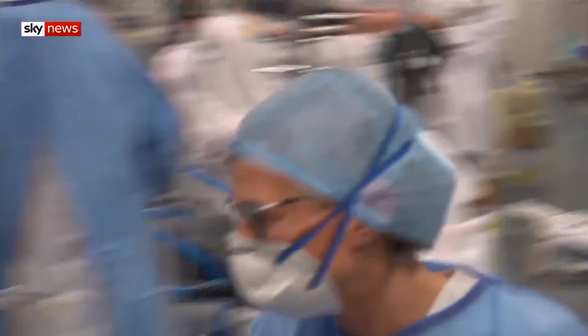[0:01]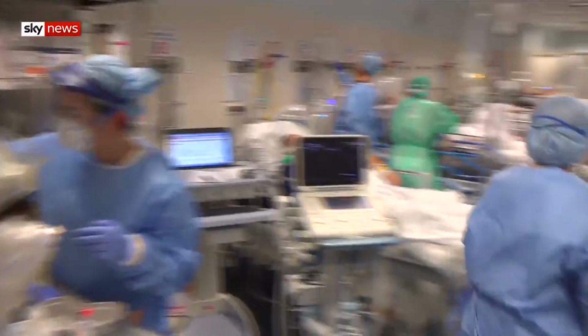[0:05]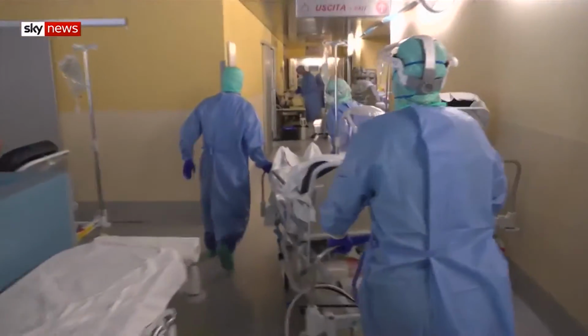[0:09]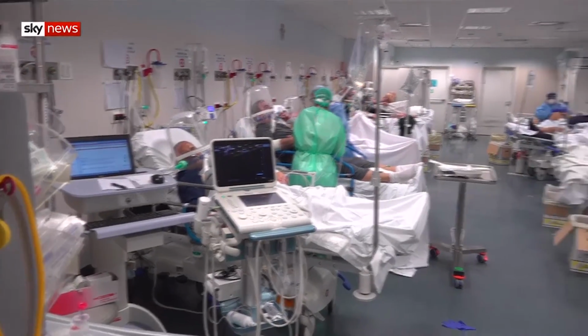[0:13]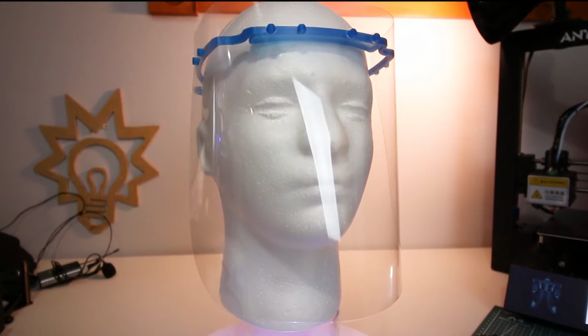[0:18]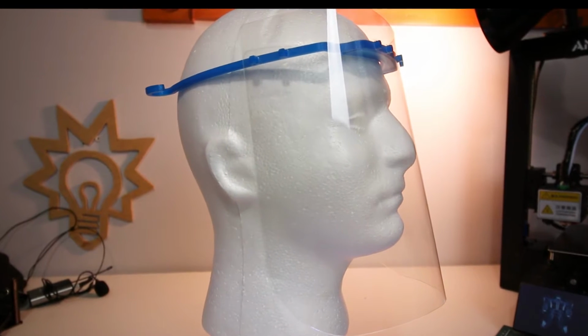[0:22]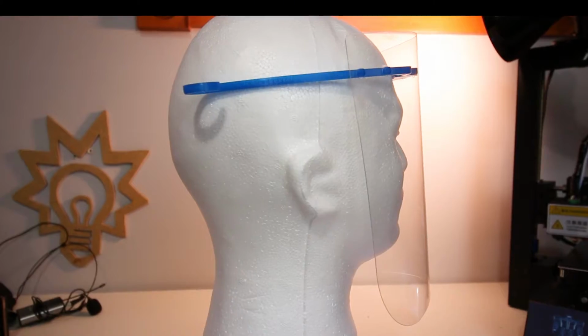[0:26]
Around the world, our healthcare professionals are really up against a challenge right now, and in some cases, they don't have adequate PPE to protect them. I thought, well, maybe there's something I can do about this, and decided to look into 3D printing whatever I could. Turns out, a face shield is not that difficult to recreate at home, works just as good as the professional units, and gives adequate protection for the user.
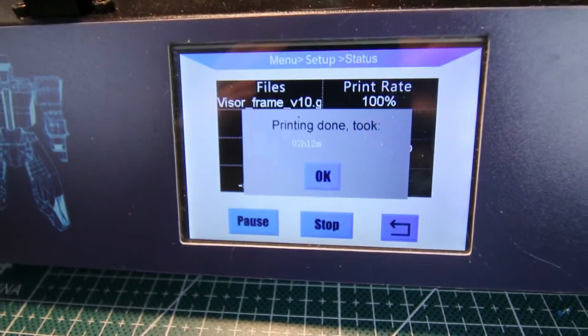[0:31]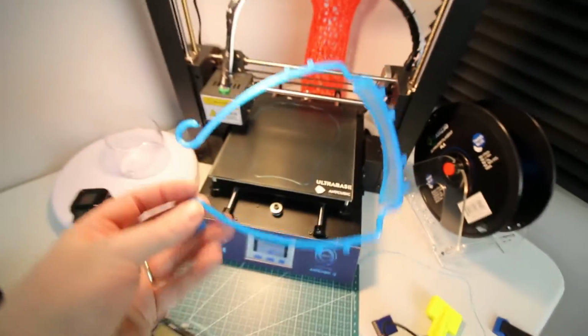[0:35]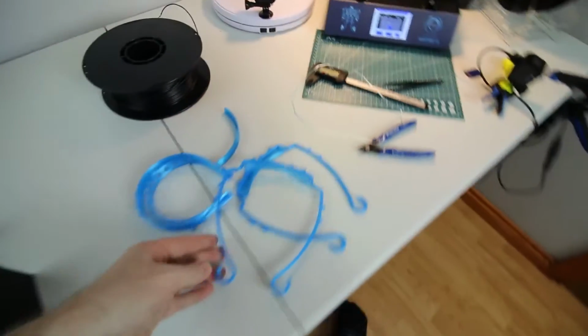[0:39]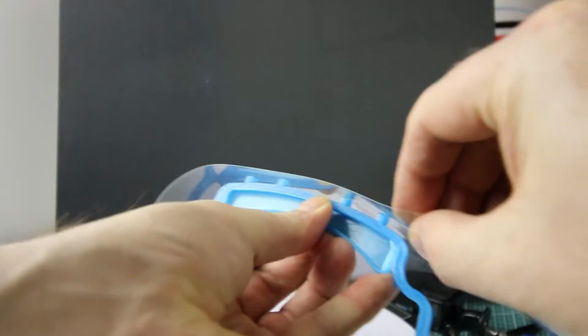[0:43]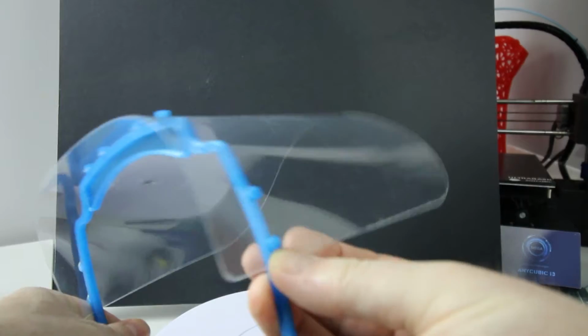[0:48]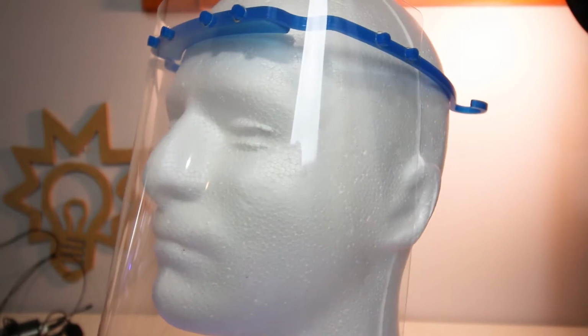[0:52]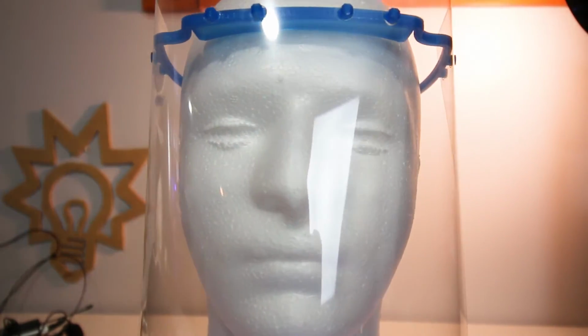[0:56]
In this video, we'll take a look at the ones I'm making and how I went about making them. We'll play around with my new K40 laser cutter. It's a 40-watt CO2 laser that happens to be great timing because it works great for cutting these shields. I'll give you the settings I use, the instructions, pretty much everything I can so that you can duplicate these at home on your own 3D printer or laser cutter or whatever you have. You can make them by hand if you want to.
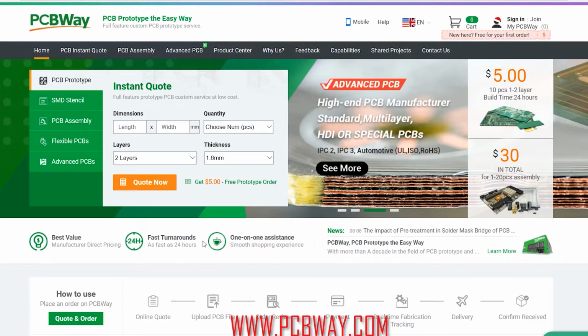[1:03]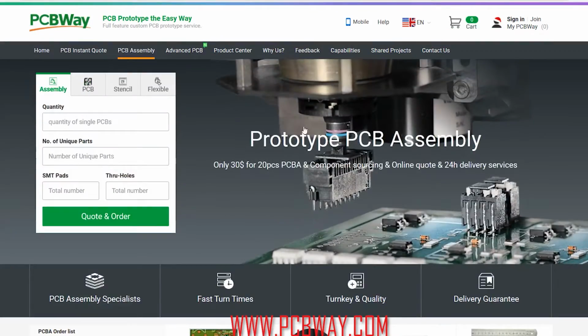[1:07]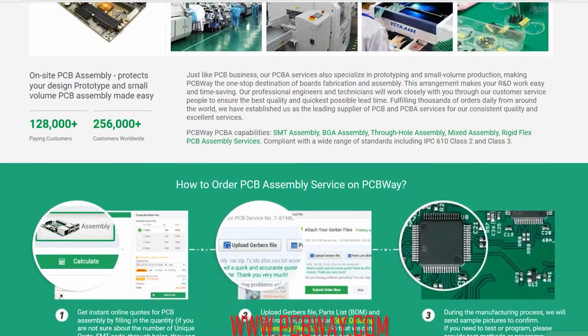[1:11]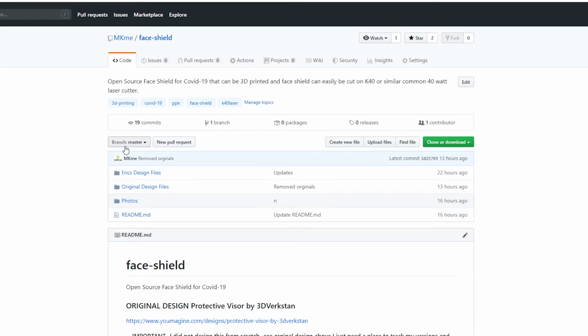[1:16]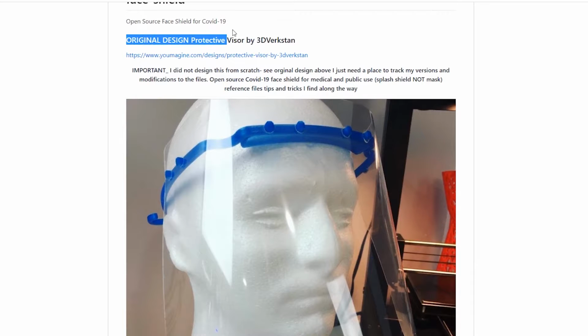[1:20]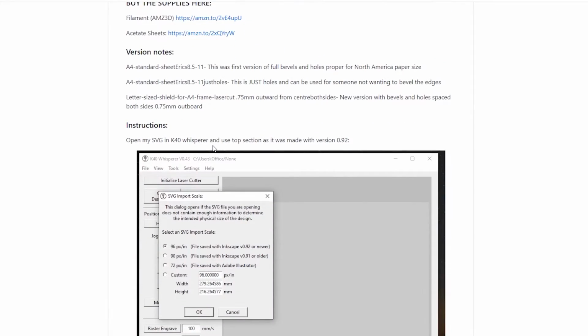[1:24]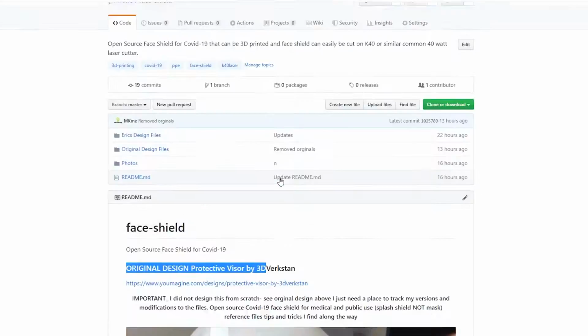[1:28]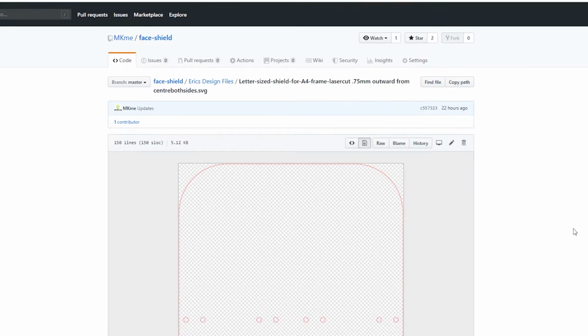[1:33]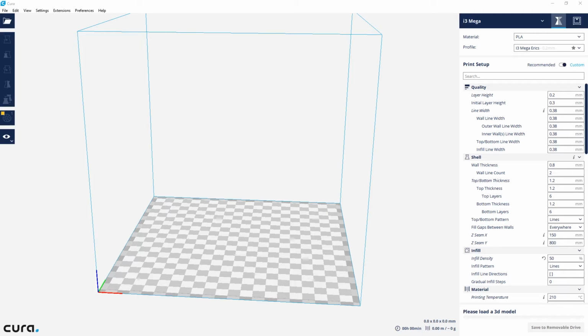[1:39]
So, if you follow me on Twitter, you probably saw this from start to finish when I reached out to Naomi and Chris to find out, did they know anyone with a design file for an easy-to-make headset? Somewhat easier than the really popular one right now. I wanted something that could be printed fast and cut from existing materials, particularly the faceplate. I wanted to be able to use plastic that anyone can get. Well, sure enough, here we go.
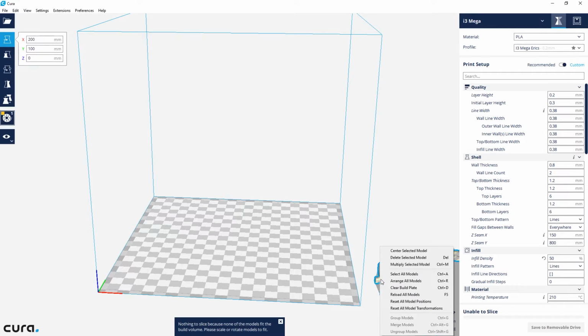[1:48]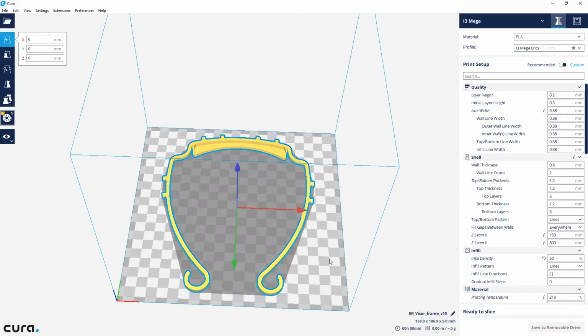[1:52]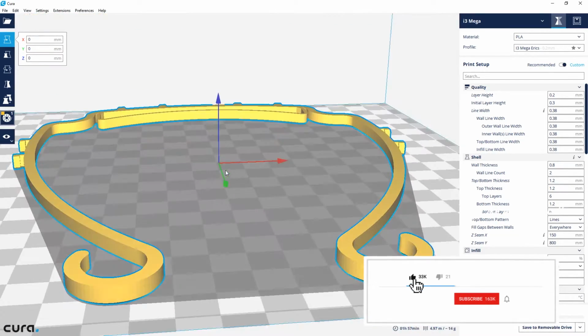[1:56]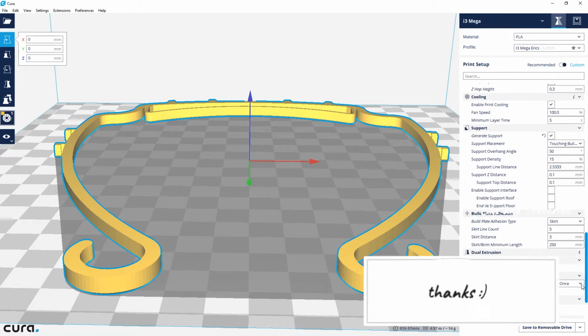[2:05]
The design and everything is linked below. I was able to download it from the designer in Sweden. He made it available open source, which was absolutely awesome. Pulled it into Cura. The settings are pretty straightforward. I also link my GitHub down below for all my Cura settings for my different printers in case it might help you. I loaded things up, hit print, and sure enough, things came out pretty good first try.
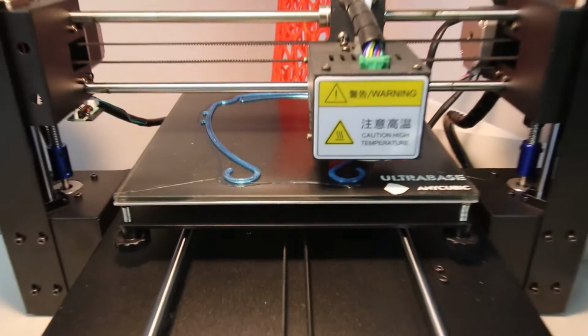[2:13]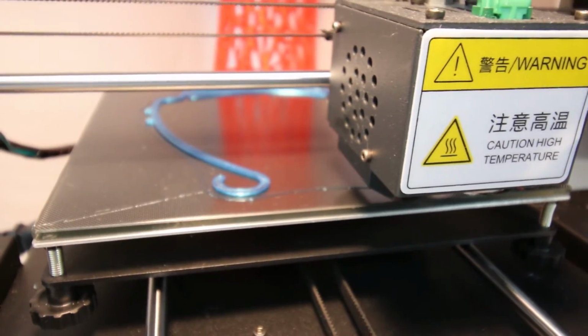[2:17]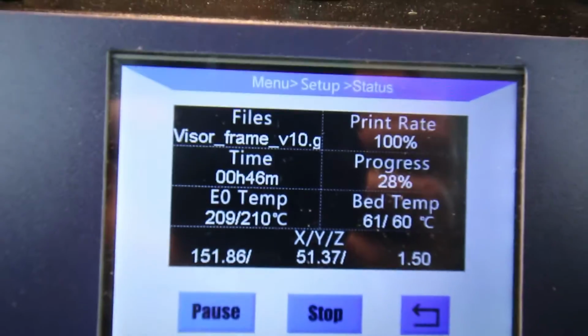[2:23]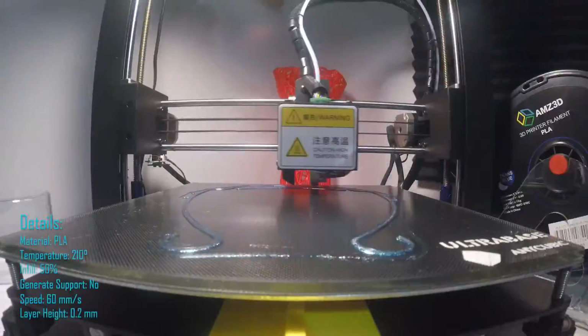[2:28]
In a little over 2 hours, the i3 Mega made short work of this headband. It fits great. It's nice and flexible with the 50% infill, good and strong. I had no issues whatsoever. It just worked first try. Here's a time lapse.
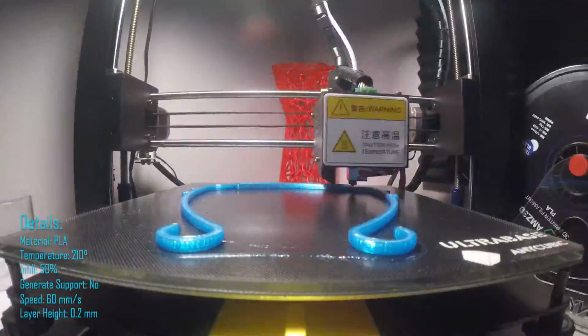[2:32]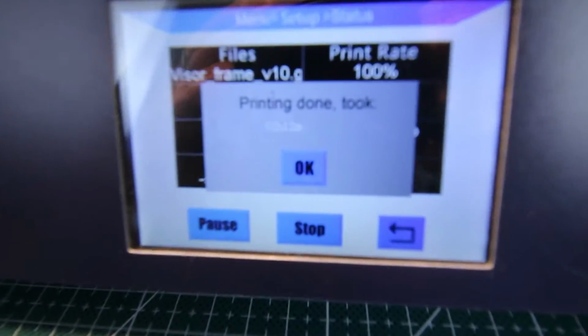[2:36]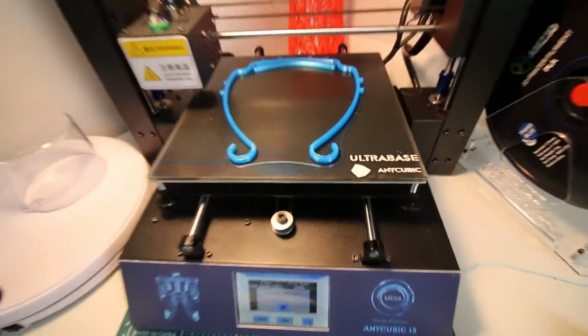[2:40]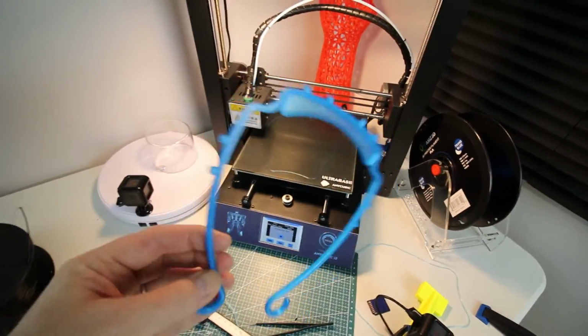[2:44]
It should be said that this ultra base print bed on the i3 Mega is just incredible. It's great for production parts like this, but you just walk up, pull your part off, hit go, and you're back printing another one. No messing around with glue or scrapers or anything like that.
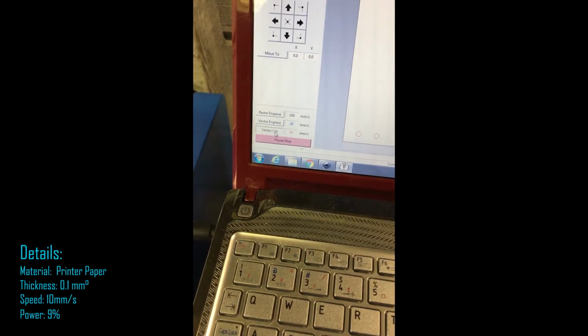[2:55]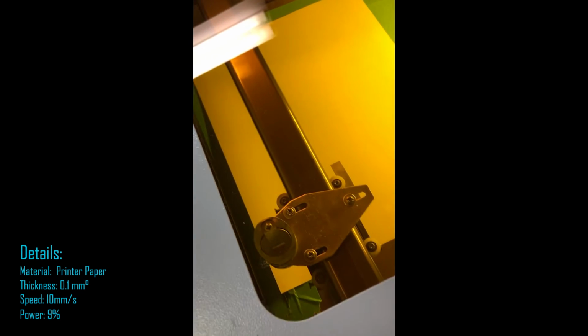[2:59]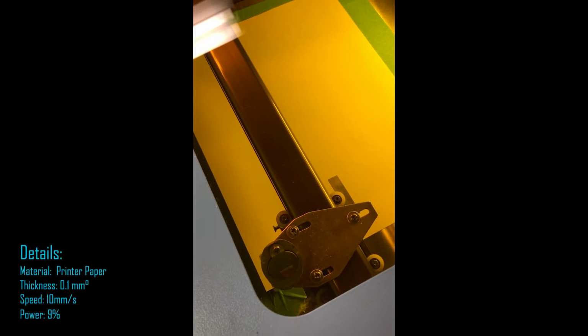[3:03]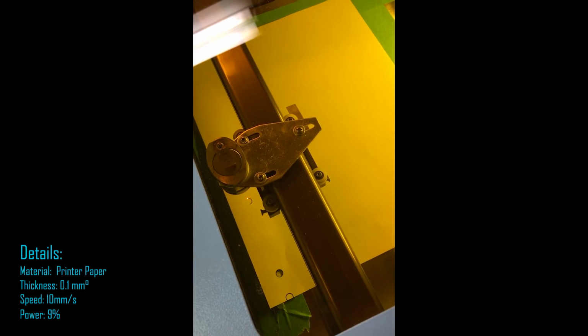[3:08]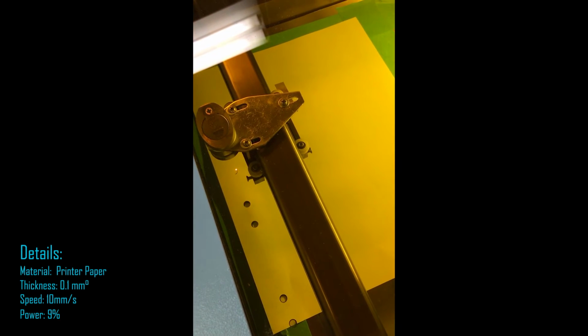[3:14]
At this point, I went out to my garage where I've set up my K40 40-watt laser cutter. I have a video on that coming up too, guys, if you want to see a review. But I'm pretty new to laser cutting, so I definitely have some things to learn. As you'll see here, the first design cuts right off the edge of the paper. No good whatsoever.
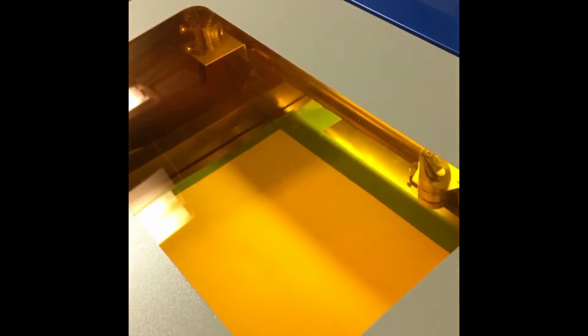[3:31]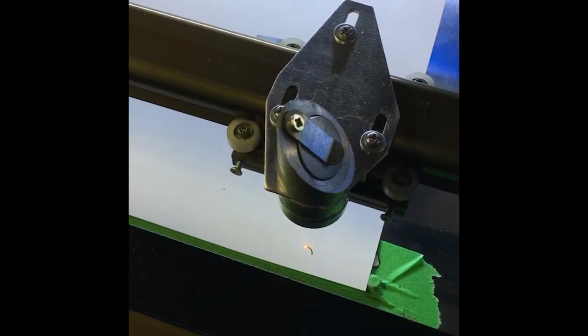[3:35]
This was due to the fact the design came from a friend in Sweden, and here in North America, we use a different size of paper. Our 8.5 by 11 is not the same as A4 in Europe. Minor thing to fix up. I got that fixed up in the design. I was able to run another cut. This time, it seemed to be just exactly what I was looking for. An 8.5 by 11 sheet was going to work perfectly.
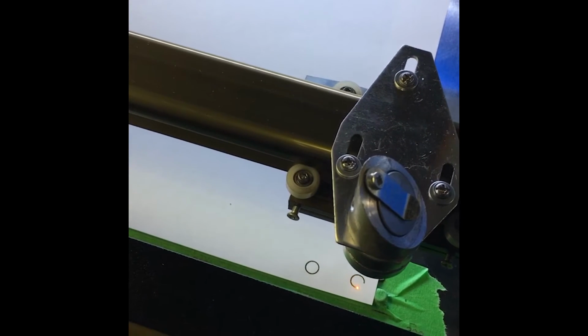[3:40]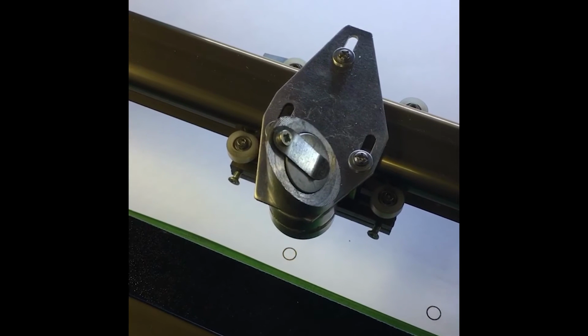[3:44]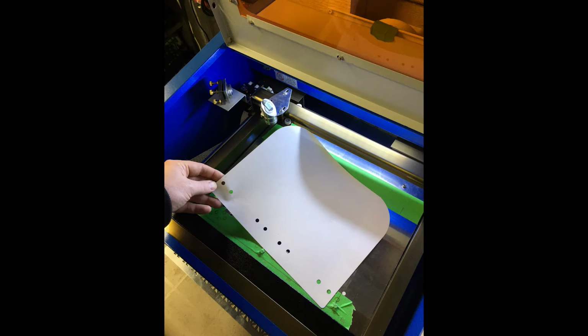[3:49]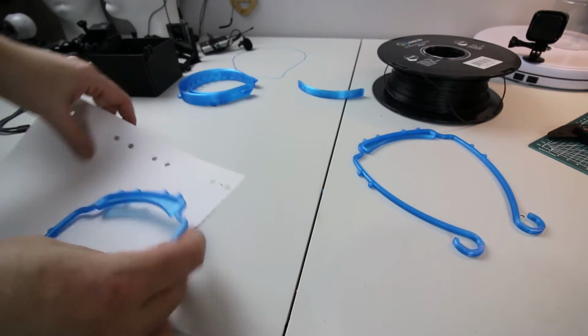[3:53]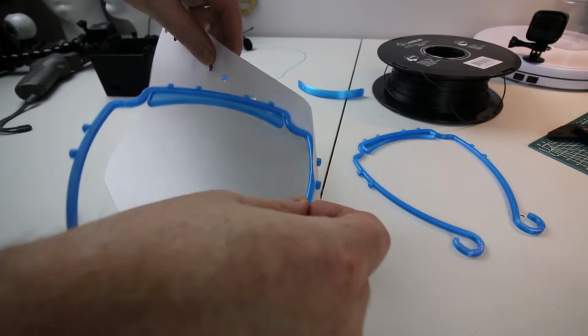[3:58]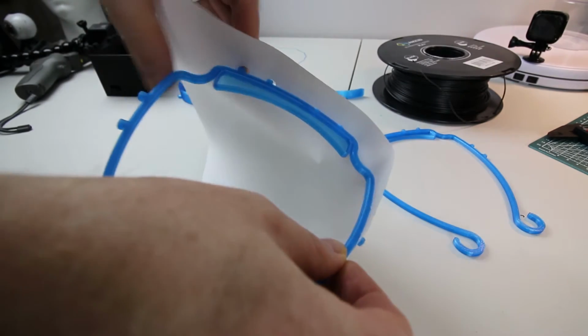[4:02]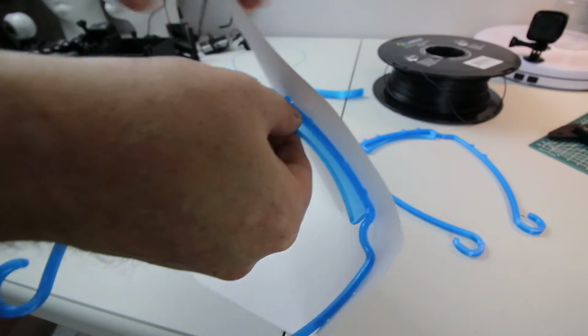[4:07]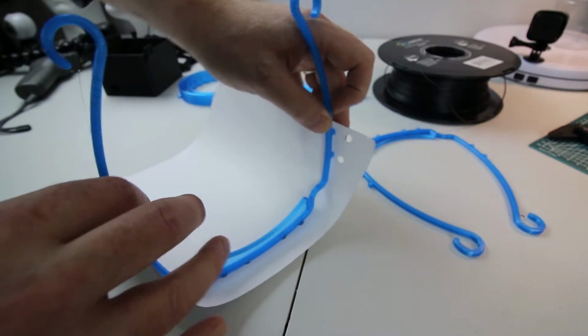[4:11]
Now that I had my paper cut out, I could go ahead and test fit it into the mask. The original designer used beveled edges on his and provided me a new design as well. All I had to do was modify the hole spacing a little bit. So here's where I try the paper template onto my 3D printed brackets and found out they fit pretty good, but it does need a little bit of work here. The hole spacing needs to be spread out a bit. Minor thing. This is why we do prototyping. This is why I used paper in the first place.
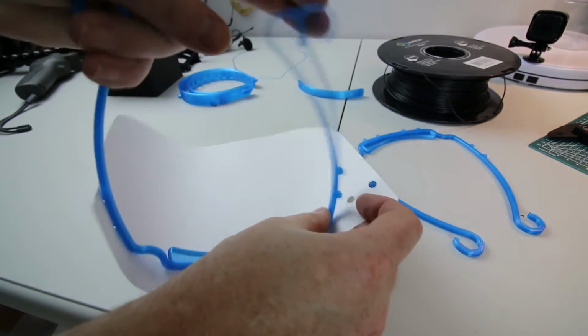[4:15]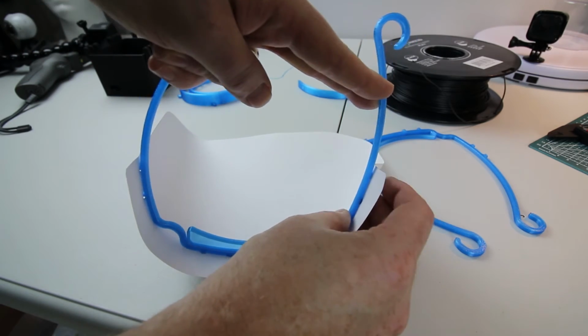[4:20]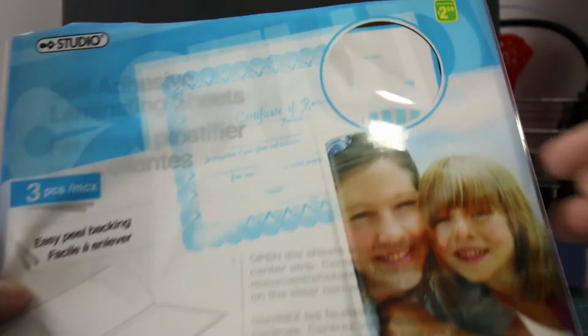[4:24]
But overall, I'm really getting excited at this point. This really looks like a viable face shield, something that anybody can use anywhere. With things under quarantine, I did what any good maker would do.
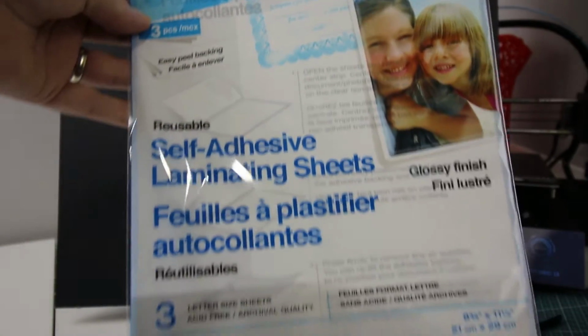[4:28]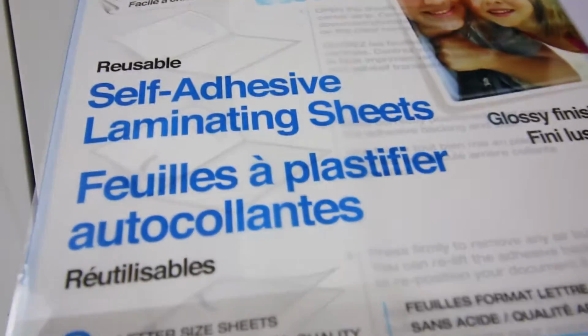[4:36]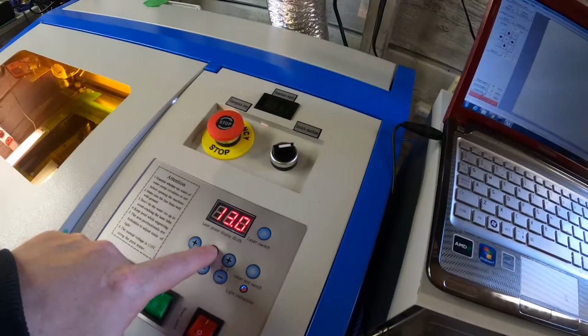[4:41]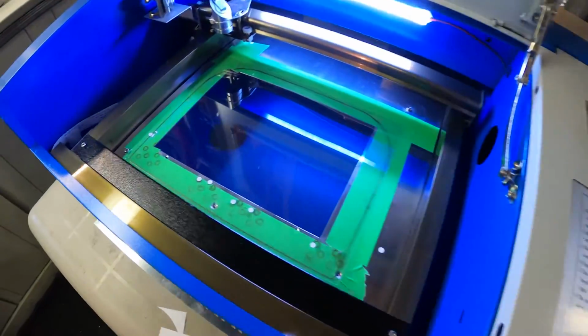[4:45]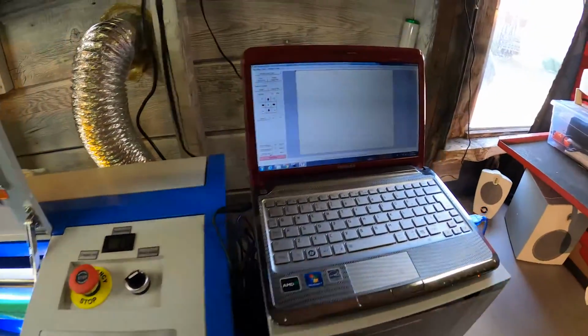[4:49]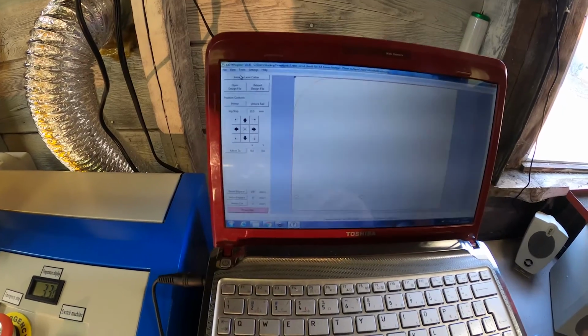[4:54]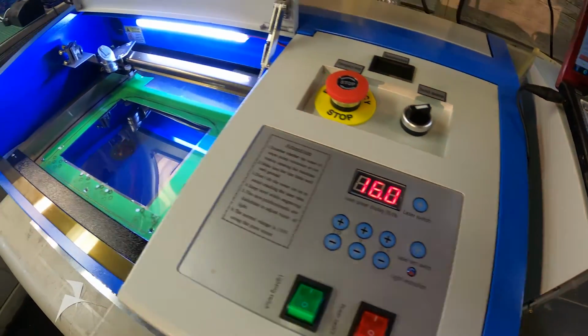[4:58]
I went raiding through my office cupboards and found these self-adhesive laminating sheets. And I thought, well, that might just do the trick, but only use one half of it. One side is a little thicker than the other. Back out to the garage, I got the laser cutter fired back up, but this is where my inexperience kind of shows through. I didn't know what power setting to use on the laser whatsoever, so I started off at 16%, which was way too high for this material, but it did work
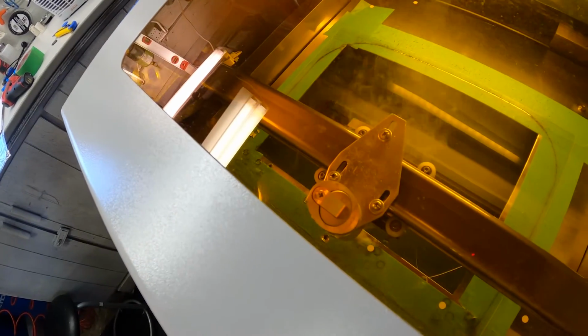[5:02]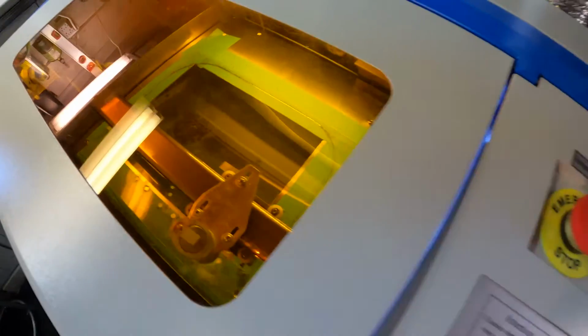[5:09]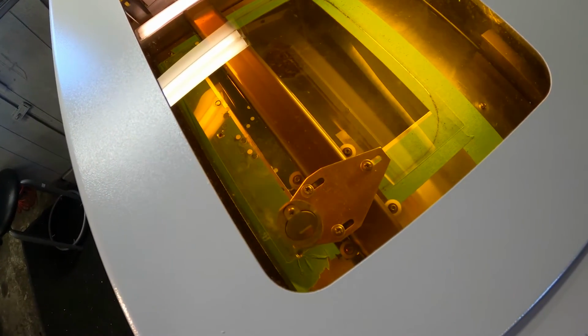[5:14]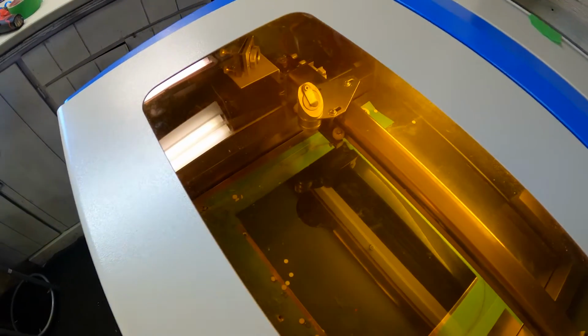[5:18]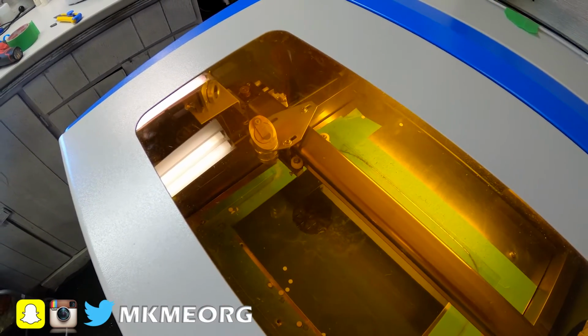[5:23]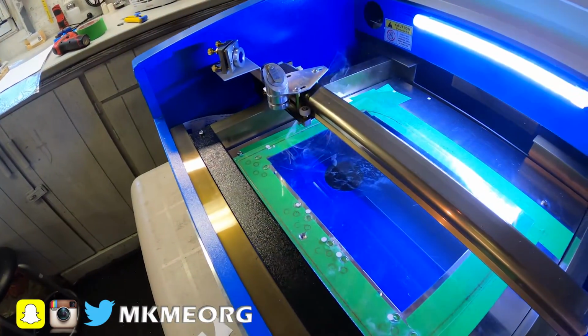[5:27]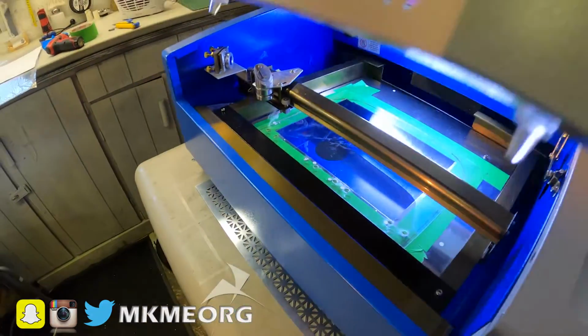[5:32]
fairly well. Although I'm completely new to laser cutting, I'm finding a lot of similarities to my 3D printing workflows. Although we don't slice it, the workflow up to getting the model ready to print or cut is very similar. And ultimately, just being able to watch the machine and see a piece of material go in one state and come out in the state we desire for the part we need for a project or a build is just fascinating to me.
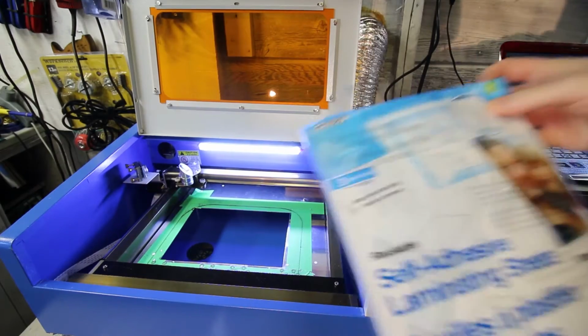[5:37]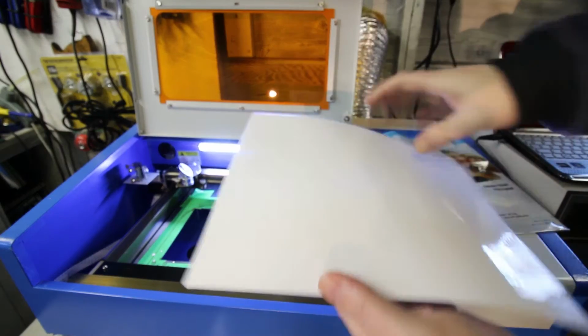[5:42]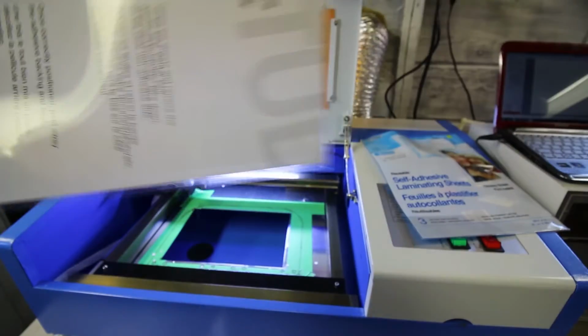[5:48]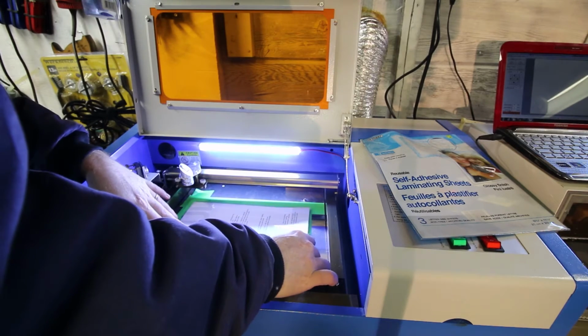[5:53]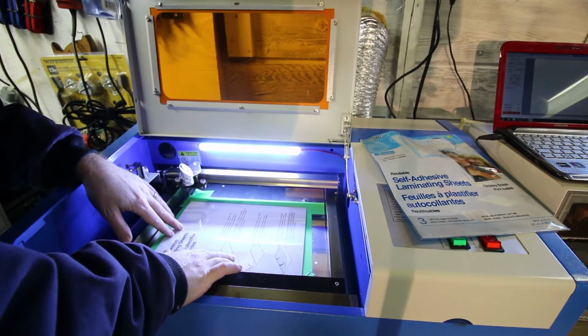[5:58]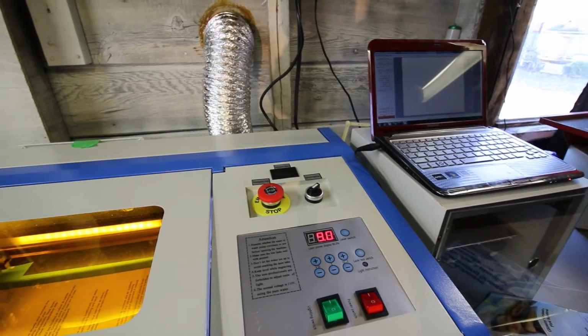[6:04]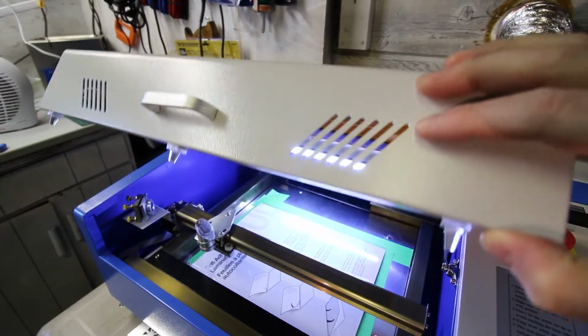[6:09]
I wondered about just using the adhesive sheets, but removing the sticky side and leaving the cardboard insert and everything behind and just putting the whole works right into the laser cutter. I thought, well, that might work a lot better because we have a little bit of a layer in between. We'll give it a go. I fired up K40 Whisperer and set it to raster cut at 9% power. Sure enough, this worked out very, very well, and better than I had expected, actually. I see no reason that this can't work going forward.
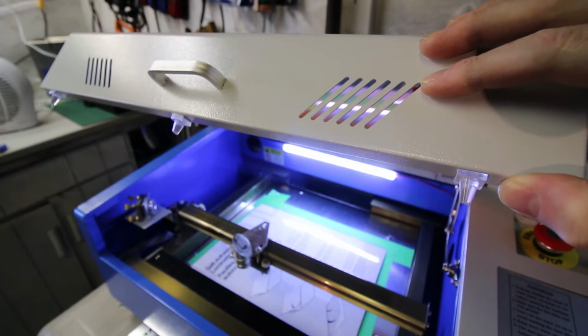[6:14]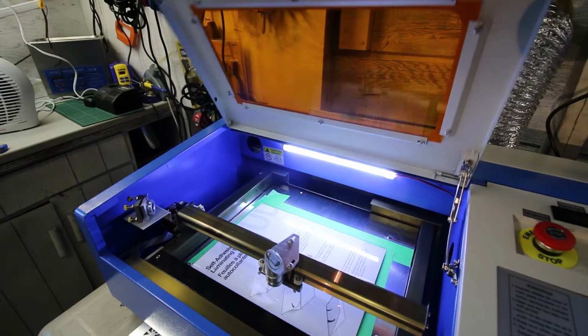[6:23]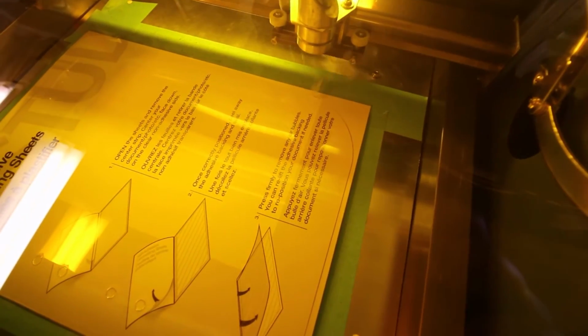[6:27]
Yes, I'm aware of the dangers of having this cover open. I did have my laser glasses on. Don't do this on your cutter. There are risks to having very high-powered UV lasers right in front of your face.
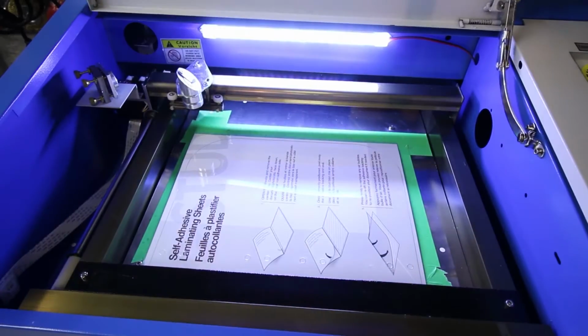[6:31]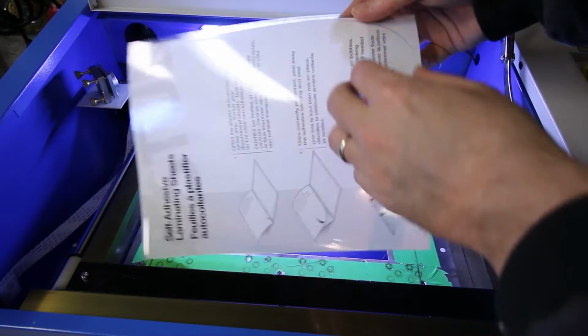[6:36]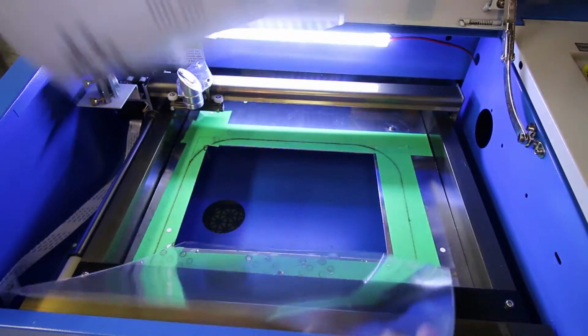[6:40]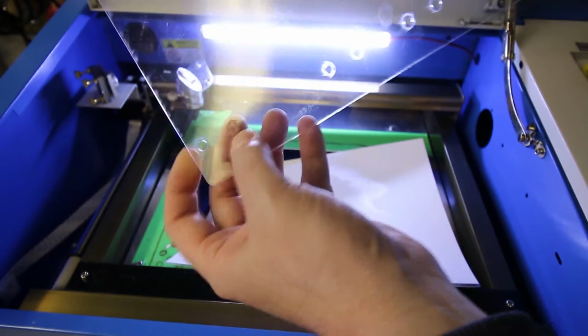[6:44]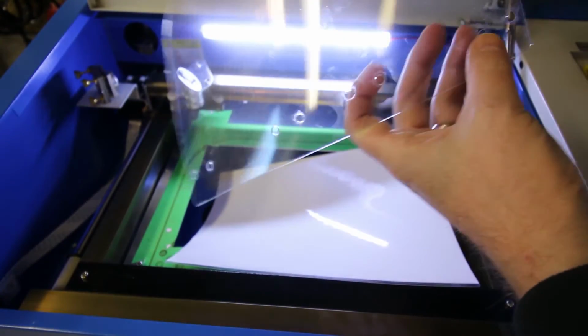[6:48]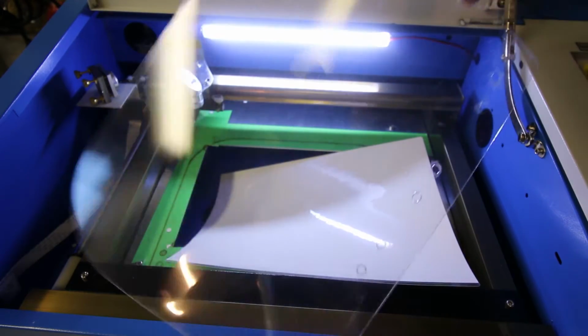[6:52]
Once the laser finished up, I was able to take things out, take a look at it. Again, I was super impressed with how well this worked. Even at 9% power, the K40 had no problem punching through here. The holes came out just great. Just have to give them a little poke and the inserts fall out. Far less charring or smoke damage on the plastic. Actually, none whatsoever. A little bit of Windex clears this right up, and this is ready to go.
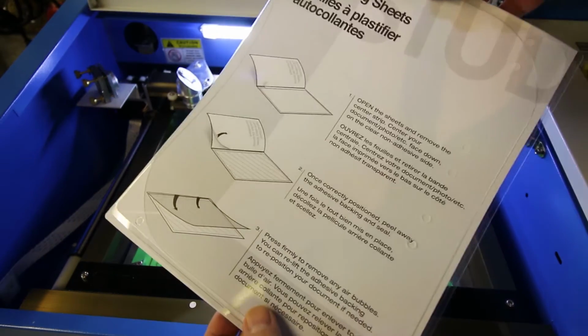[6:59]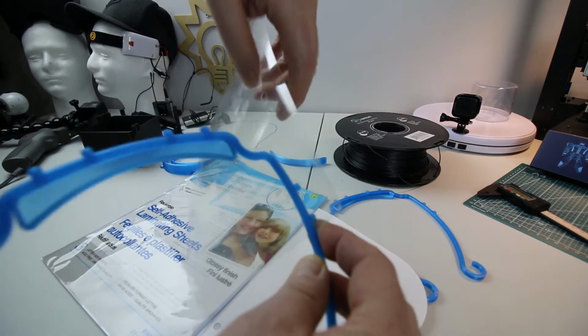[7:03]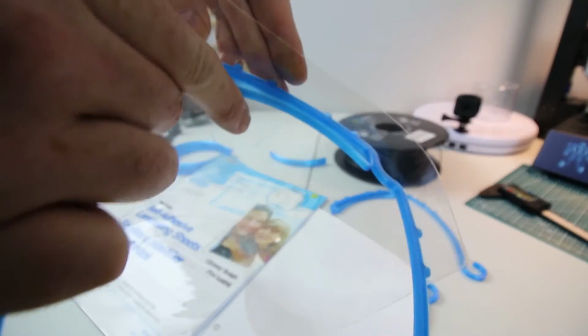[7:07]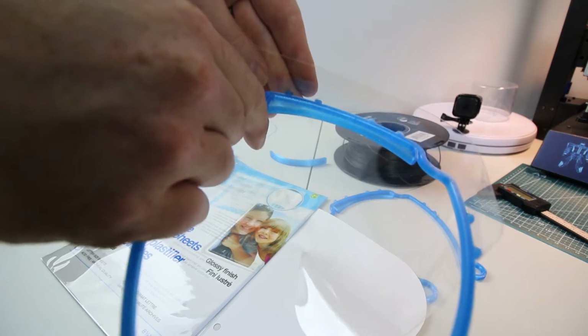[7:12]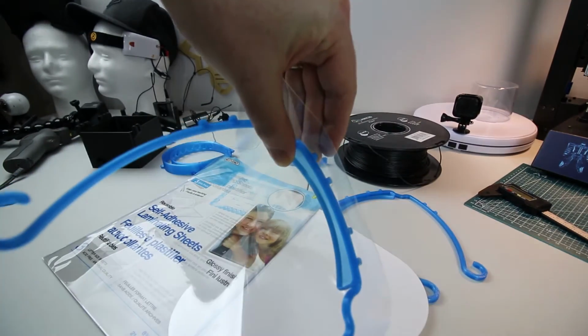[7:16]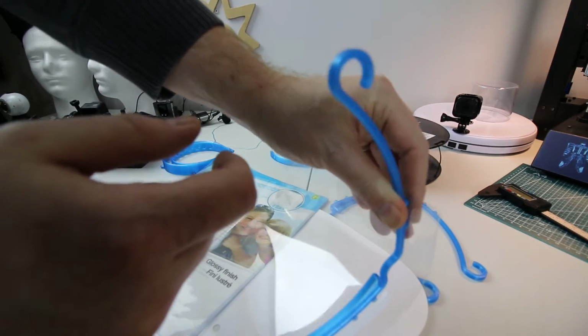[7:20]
Installing the shield on the headband is super simple. It just hooks around the little tabs on the side, wrap it around the front, shoving it down on the pegs, and then slightly spread the headband out. This is where it'd be nice to have one extra hand in front of the camera here. But you spread the headband just slightly and it'll pop right on the far side.
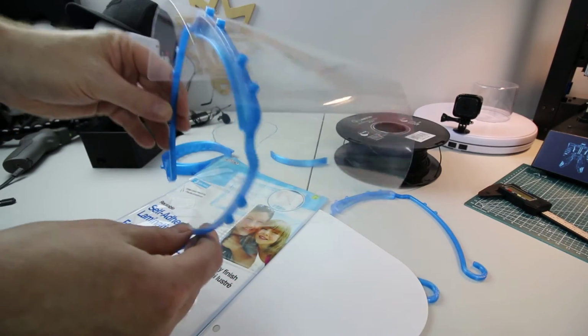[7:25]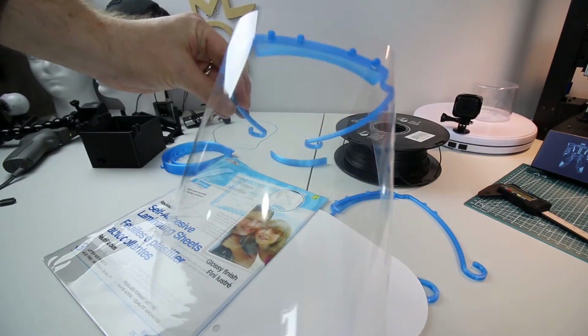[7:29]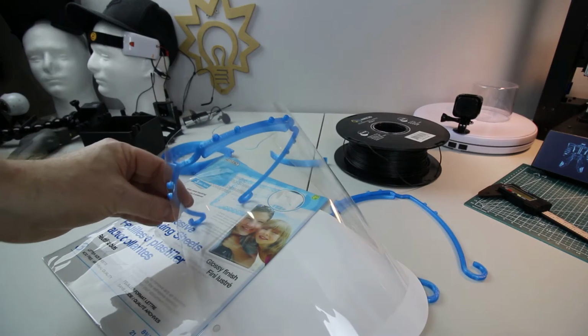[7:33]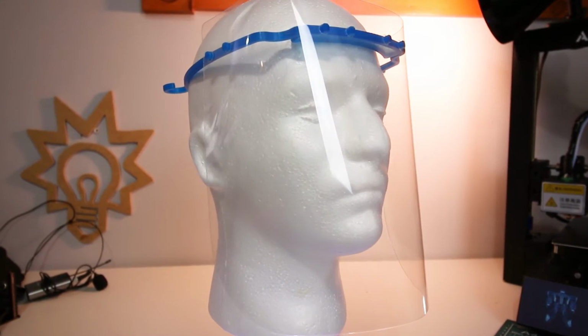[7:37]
Just like that, our shield is complete and ready to go into use by anyone in the medical field or in a high-risk situation of exposure with droplets or particulate right into their eyes or mouth. This should do the job to protect them, just as good as a commercial one. I'm pretty happy with the results.
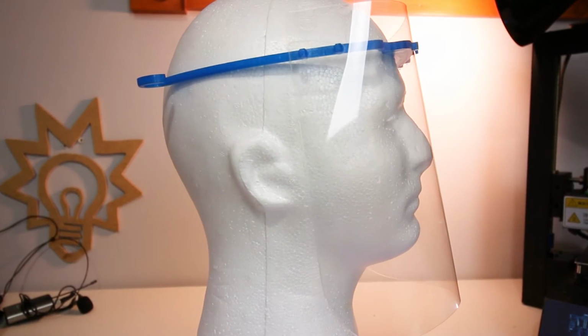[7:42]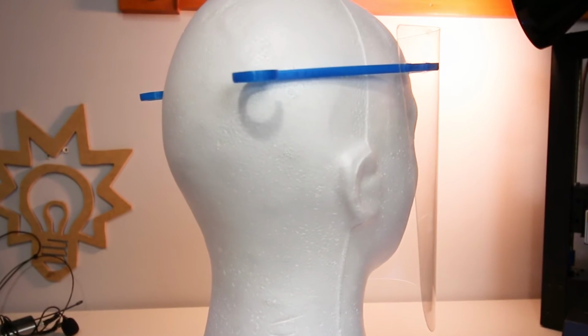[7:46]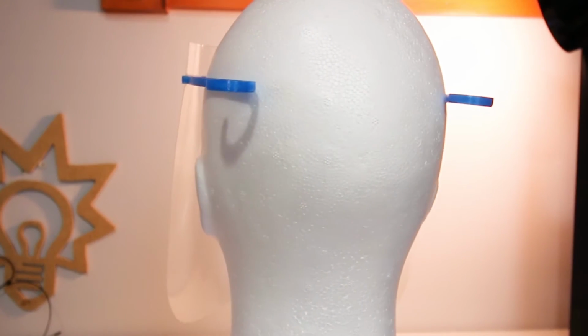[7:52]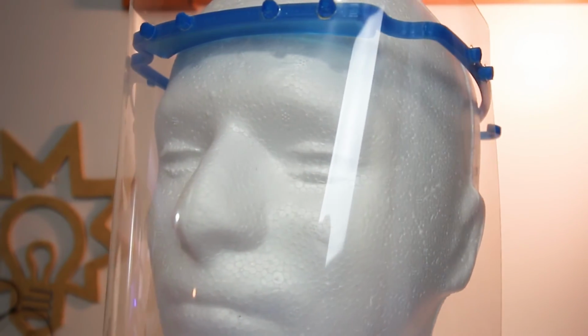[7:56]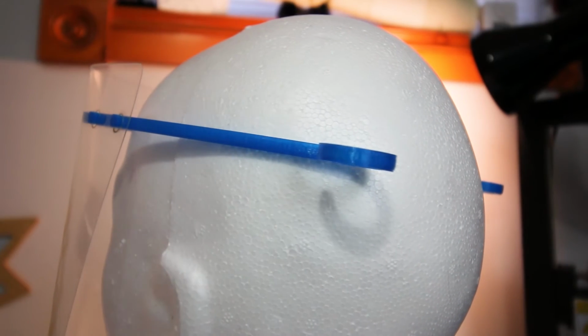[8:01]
Again, I didn't make the original design. I only tweaked the face shield slightly and made this video and put my files on my GitHub. That's it. I wanted everyone else to be able to recreate what I've done here. Huge thank you to the original designers, who you'll find linked right at the beginning in big bold letters of my GitHub, and you can also find them on Twitter.
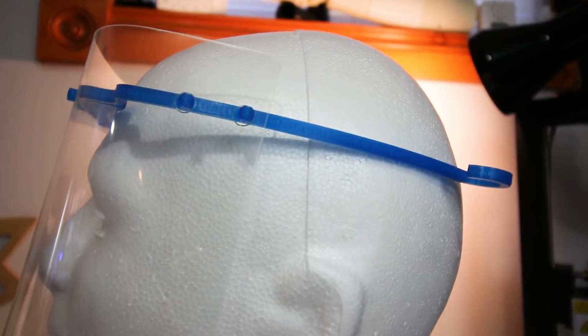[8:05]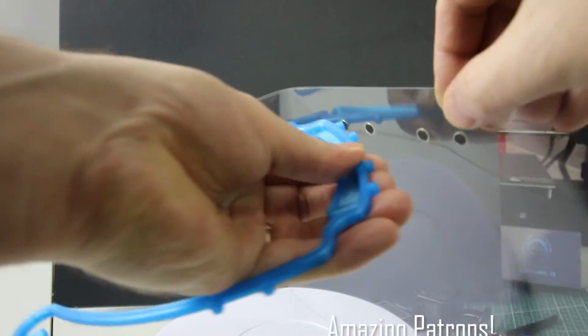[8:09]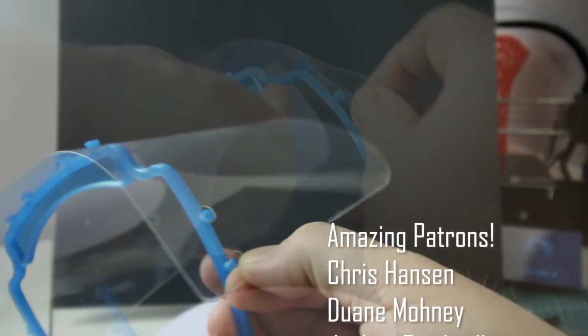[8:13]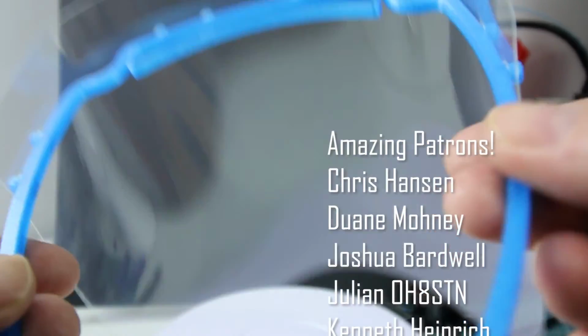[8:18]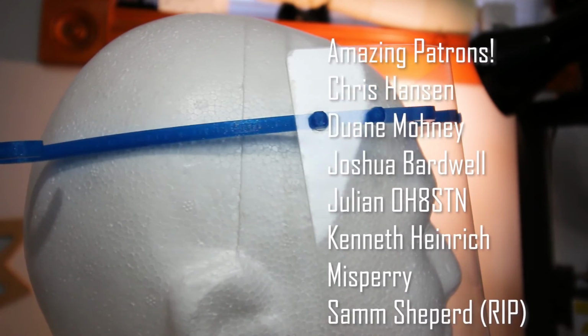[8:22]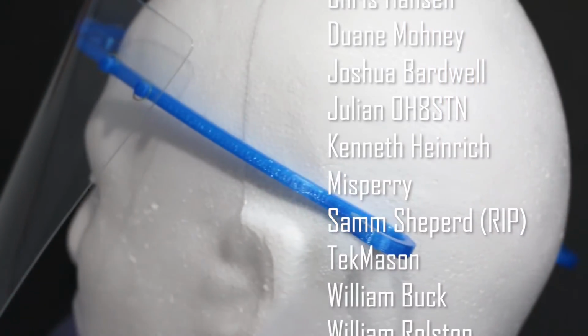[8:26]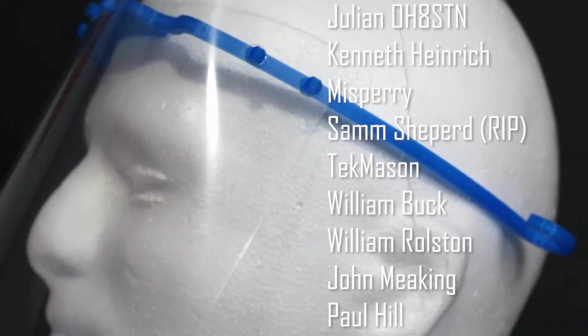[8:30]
I sincerely hope there won't be a need for these in my area, at least not an urgent one. But if there is, I think I'm ready here. I've stepped up production of these. Anytime my printer is not running on something else, it's printing off these bands. And from Amazon this week, if mail is still running, I should have plenty of the face protector sheets coming in. They're acetate sheets for overhead projectors at a very reasonable price point, so I should be all set.
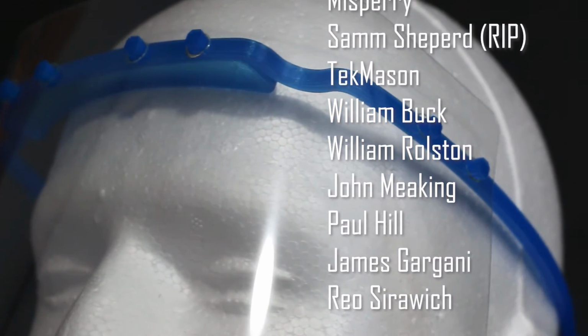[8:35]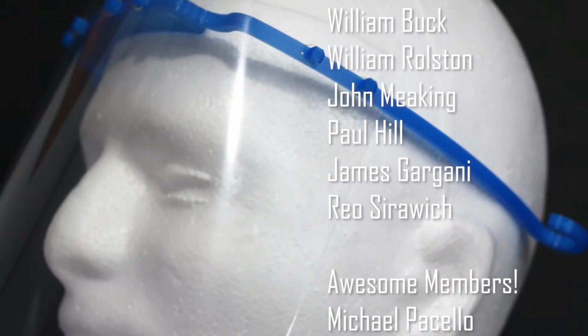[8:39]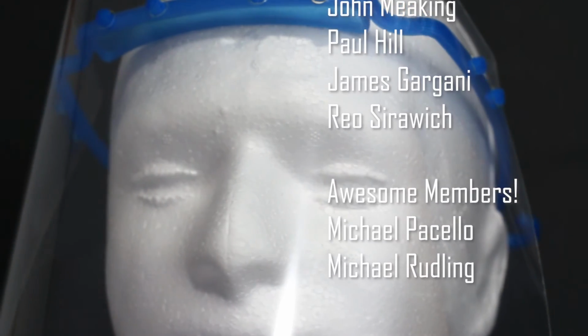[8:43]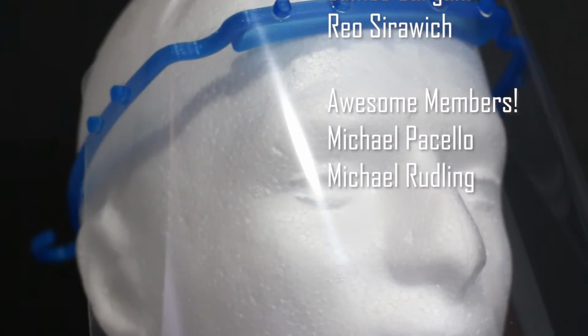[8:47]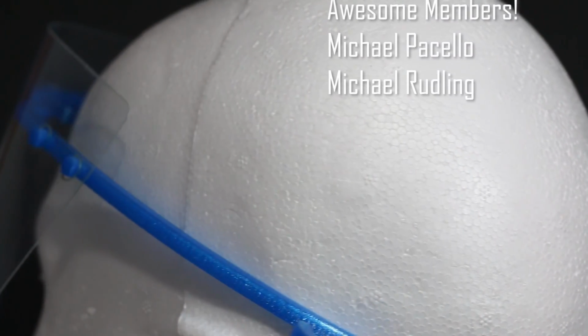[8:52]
What better than to just do a project that hopefully makes the world a little better? Cheers guys, have a great day.